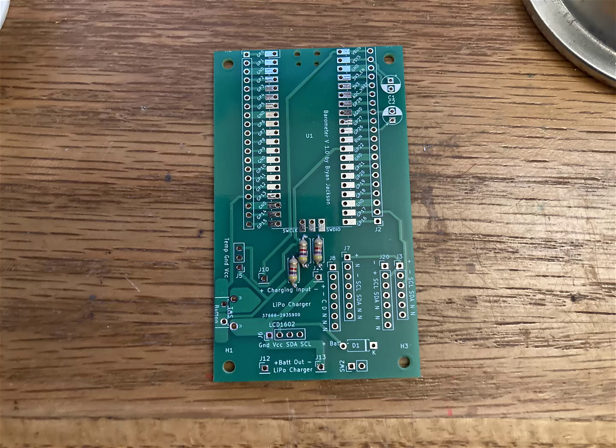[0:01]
Okay, I'm going to build this barometer. It's a design that I created myself, open source. It's got a barometer, two barometric pressure sensors, and a temperature sensor. It's made originally for medical physics to do temperature pressure corrections for radiation measurements.
The first three components are three resistors. They're 4.7K, two for a voltage divider, and one for the communications to the sensor modules. And then a Zener diode, or just any kind of low forward voltage diode.
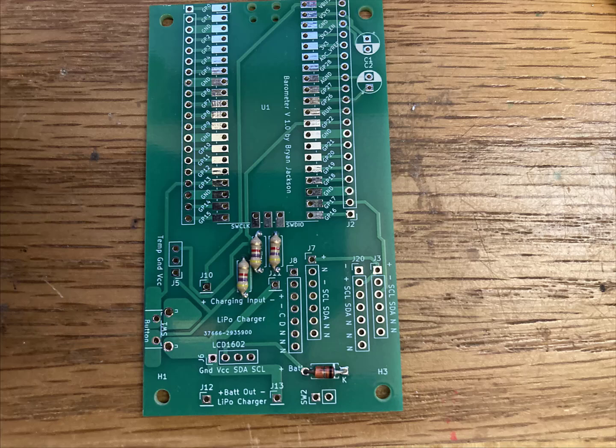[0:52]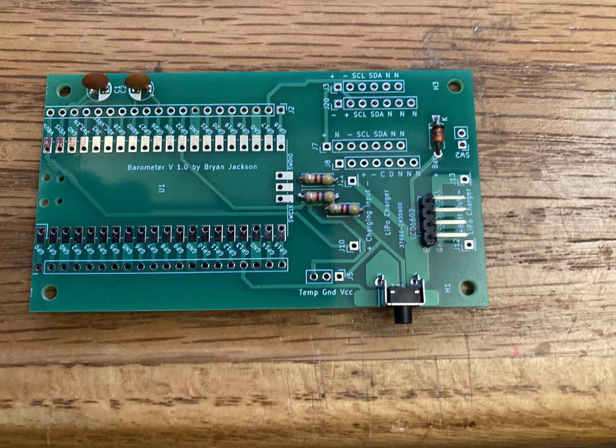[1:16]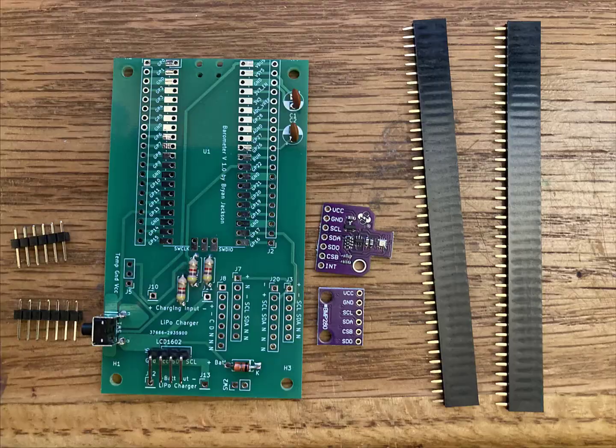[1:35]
Moving on, there are a couple of capacitors, just small 104 ceramic capacitors, and a right angle pin header for the LCD screen, it's a 1602. And then a right angle push button switch on there as well for the interface.
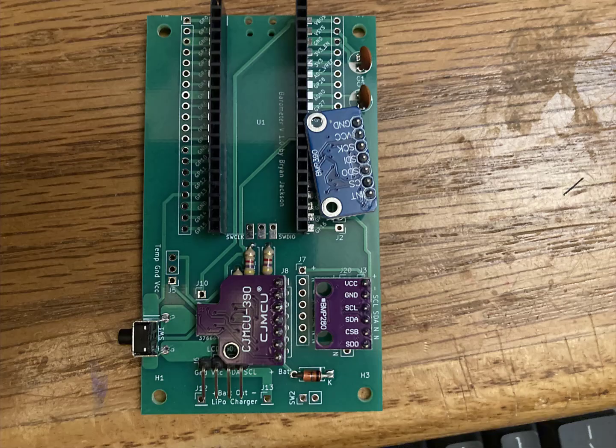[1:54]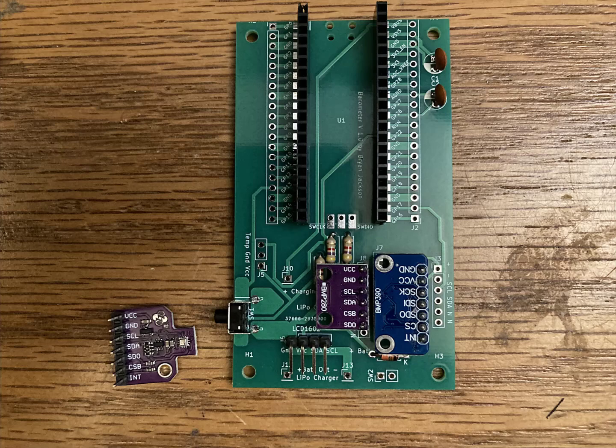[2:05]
The pressure sensors are BMP 280 and 390. I put a couple of different pinouts on here, so pick the one that matches your sensor. Here I'm using the 280 on the right in J3 and the 390 on the left in J8.
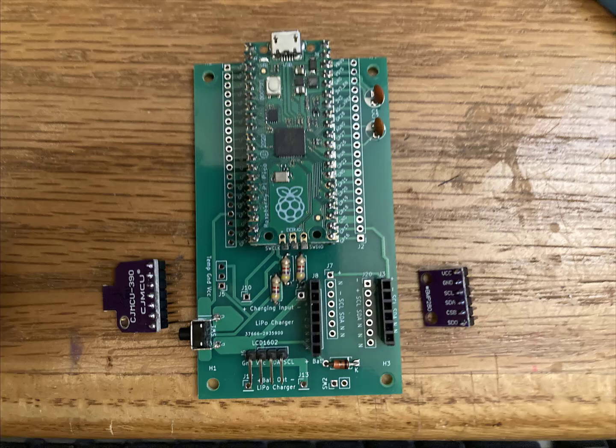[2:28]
But you can see there's a couple other types of sensors with different pinouts that should match up with other headers. So you just pick the one that you need and populate that header with a socket. You could also just solder these in permanently, but I like them socketed so that I can switch them out in case one burns out.
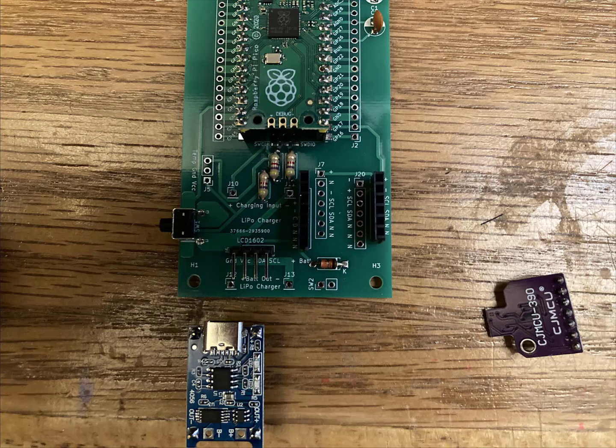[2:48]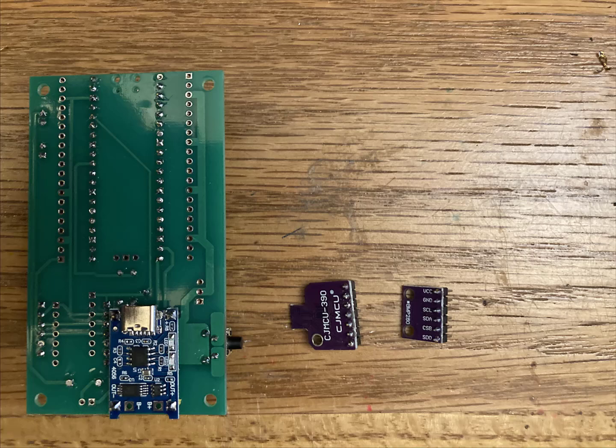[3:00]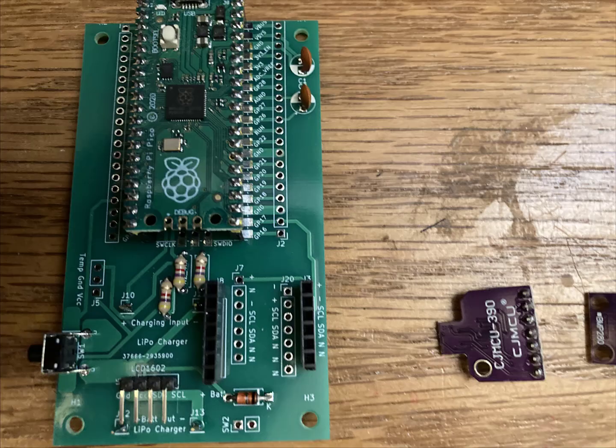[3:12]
Once you get the sockets in, you can put in the Raspberry Pi Pico, and then the charger circuit goes on the back. You can see the pinouts on the top here for the charging circuit, and then make sure it matches up when you solder it in from behind. You'll notice that the charging port is inaccessible, and that is by design. We want it to charge from the Pico instead of from the charging port on the charger.
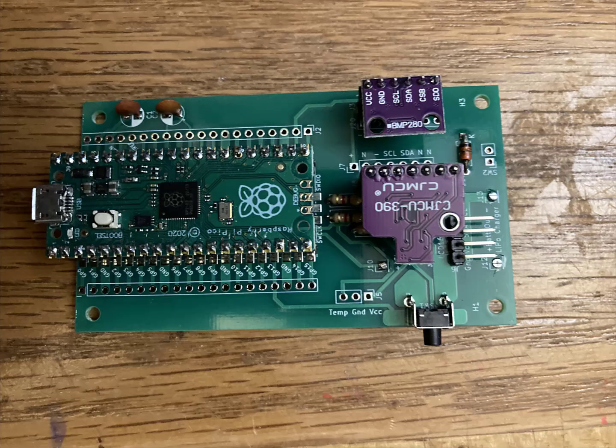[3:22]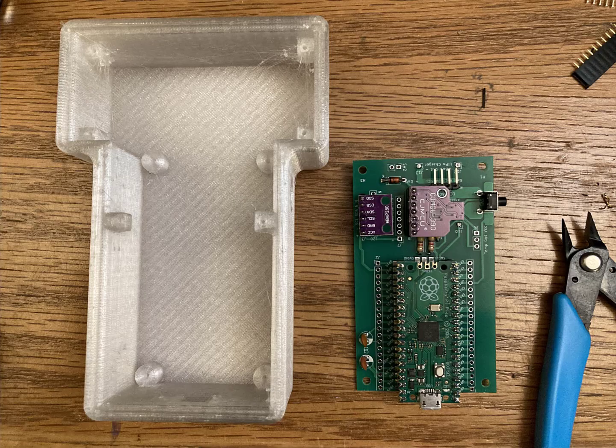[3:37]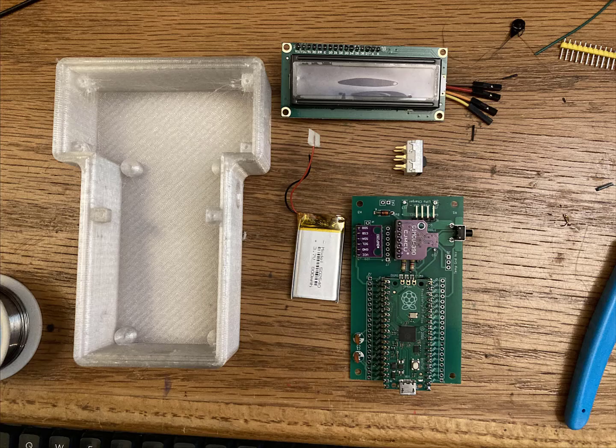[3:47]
Once you got all that in, then we want to put in the thermometer. So that goes here in the temperature, ground, and VCC on J5. But before you can solder the thermometer in, you need to thread it through the case. So here's the case. I designed it myself, and it's available online.
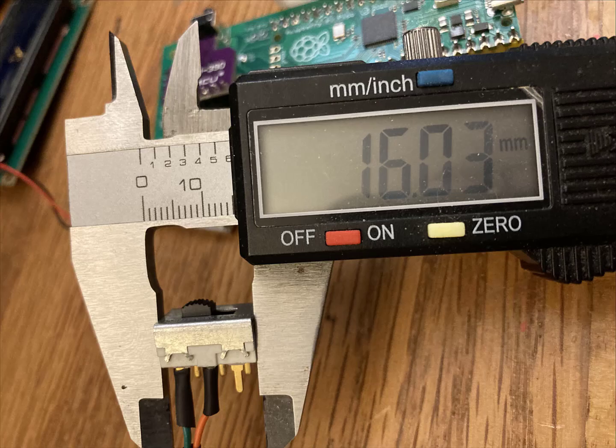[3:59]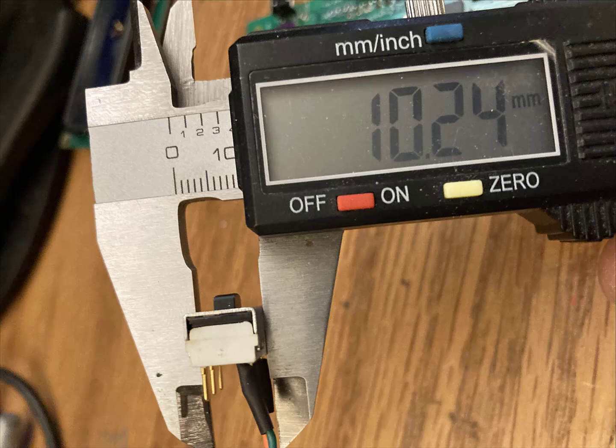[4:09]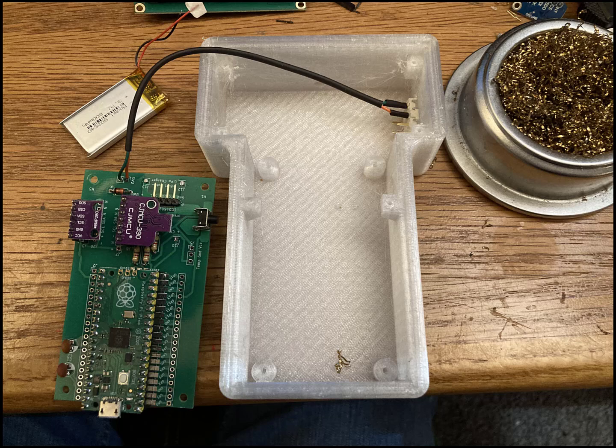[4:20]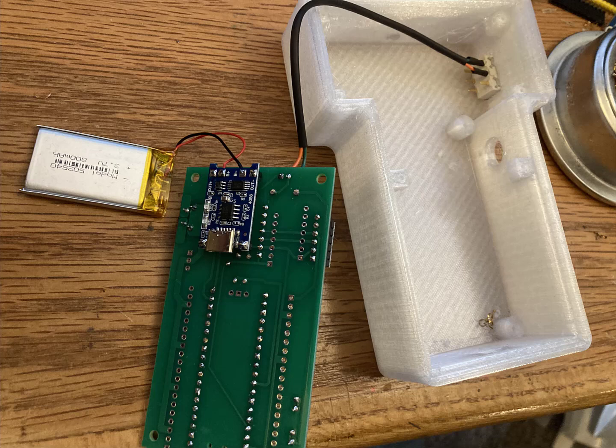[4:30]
A couple other components that you're going to need: a 1602 display, a 16 by 10 millimeter switch. The 1602 display needs to have the I2C backpack on it. There's the switch and where it solders into, as well as the battery goes into the battery terminals on the charger.
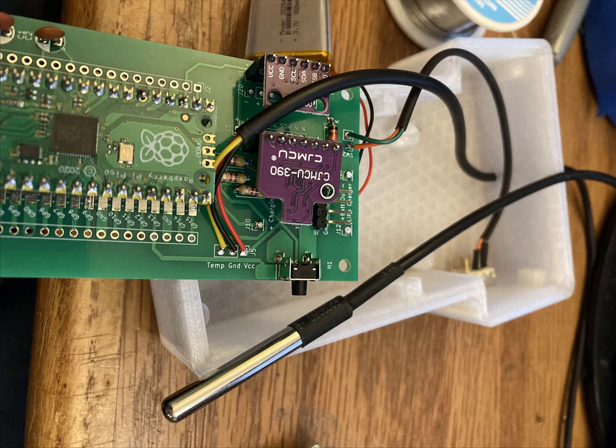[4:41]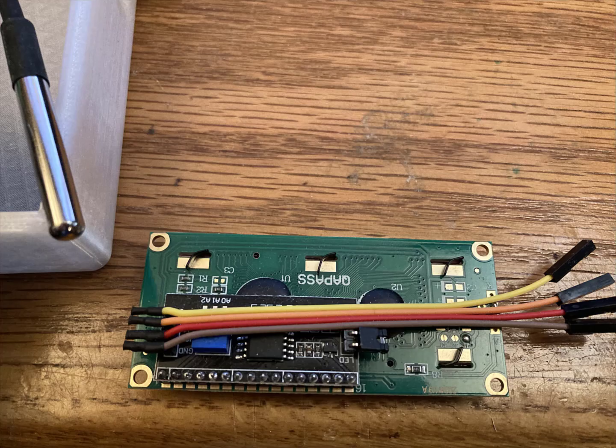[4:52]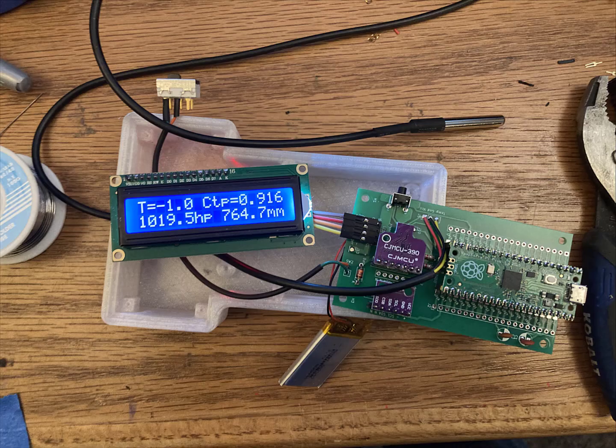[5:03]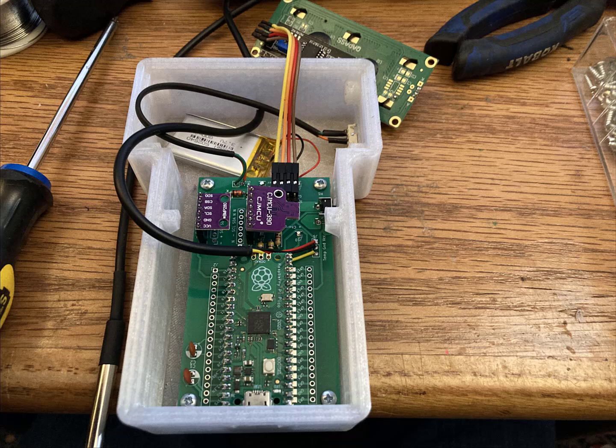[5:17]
It actually would probably be easier to solder that to the charger first before soldering the charger to the circuit board, and then thread the thermometer in through the hole in the case and solder it to the circuit board. I went ahead and just soldered some wires to the display to save room. If you're going to use a regular connector, then you probably have to make a bigger case. And then when you turn it on, it all comes up and works, if you're lucky.
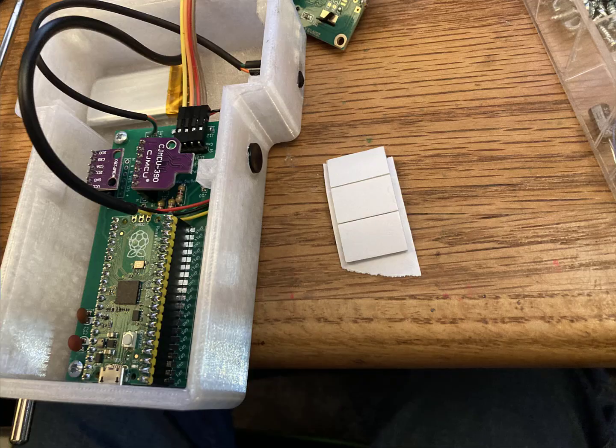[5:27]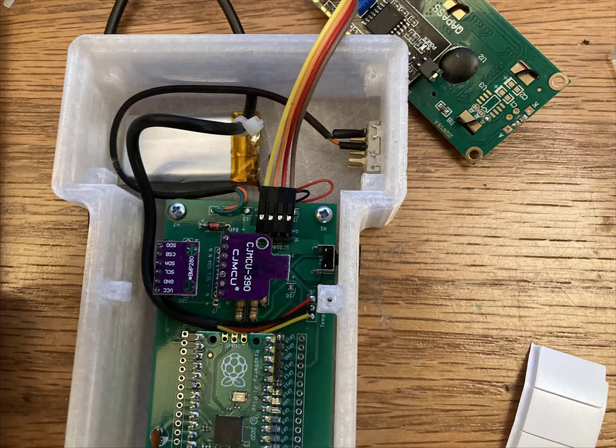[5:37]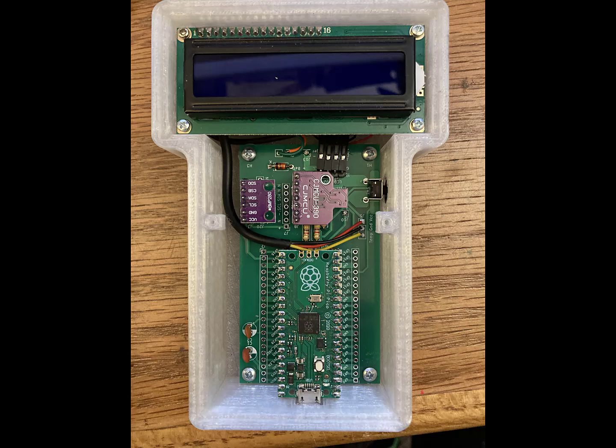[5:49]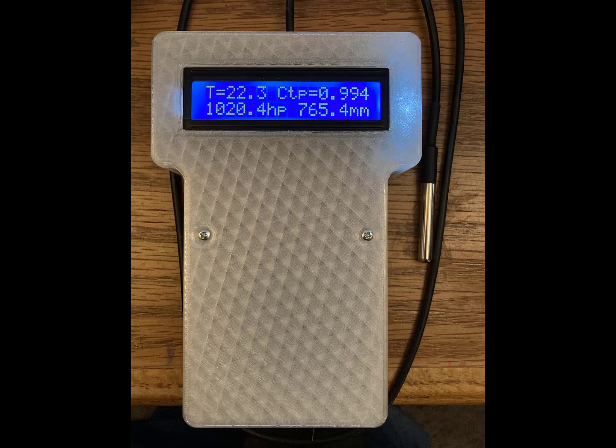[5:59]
To put it all together, you're going to want to screw the circuit board down, and then you can put the button switch button on, and then also secure the battery down with some double-sided mounting foam. Make sure it doesn't rattle around. That can be a fire hazard if the battery is rattling around. I used a zip tie for strain relief on the thermometer cable. And then you can screw the 1602 display in to the case and the top of the case onto the rest of it.
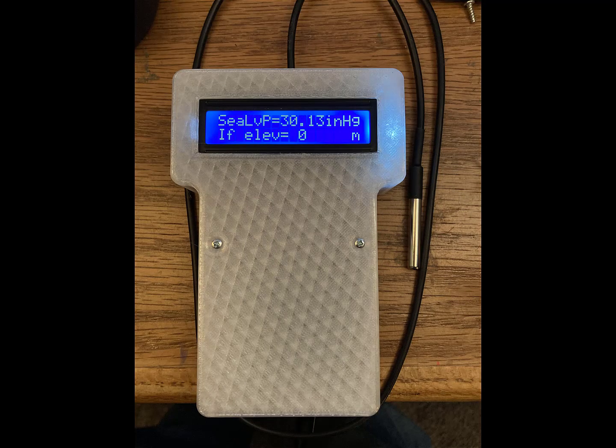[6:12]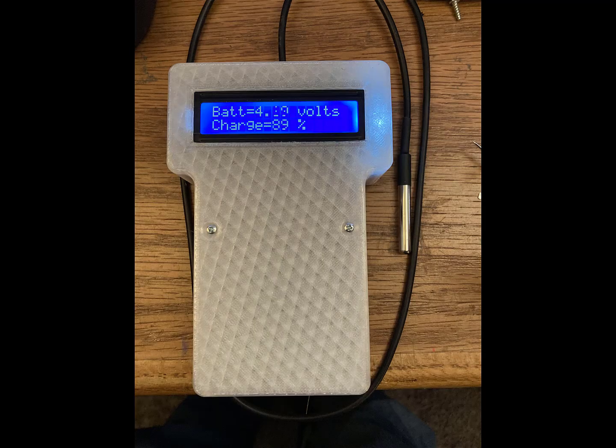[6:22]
You get a thermometer reading, you get a barometer reading, and a temperature pressure correction calculation. If you put your elevation into the software, it will calculate a sea level pressure so that you can check against the local airport. This is the third page. You push the button to get to the next pages.
Gives you a battery charge indicator. It's a rough charge indicator. It's not a real great charge indicator because it's just running off that voltage divider with the two 4.7k ohm resistors.
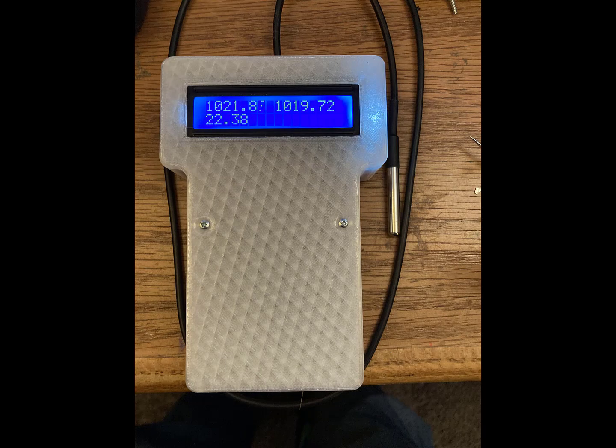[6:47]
And the last page shows you the raw readings from both of the barometric pressure sensors. They just get averaged for that first page. And then also the raw reading for the temperature sensor. And that's all there is to it.